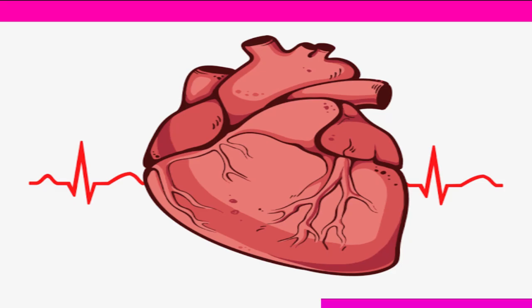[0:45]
I'm going to show you how to build a device to measure your heart rate and body temperature as efficiently and effectively as possible. And we start right now.
According to the American Heart Stroke Association, 48% of people have heart diseases. 17.3 million people die every year because of heart diseases. 7% of people have immune diseases, and 300,000 persons die because of it. We have a problem in monitoring our friends or family members suffering from heart diseases and immune diseases.
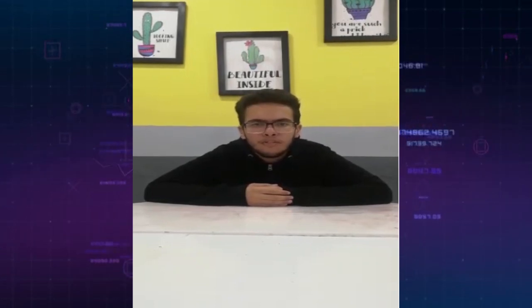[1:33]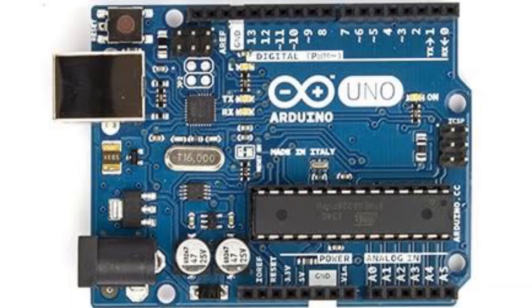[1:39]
So we thought about our project that sends the average heart rate and temperature per minute to the patient's family or friends in many ways. We will talk about them in the next videos. We will talk about our project, but first let me tell you what components we will need.
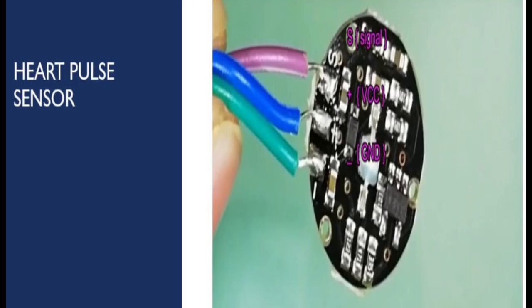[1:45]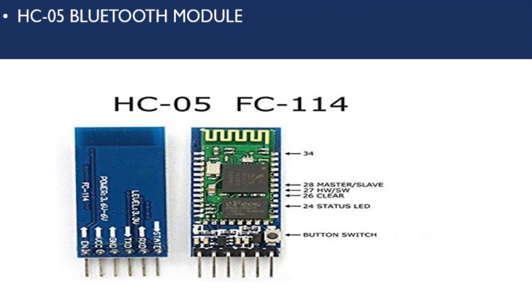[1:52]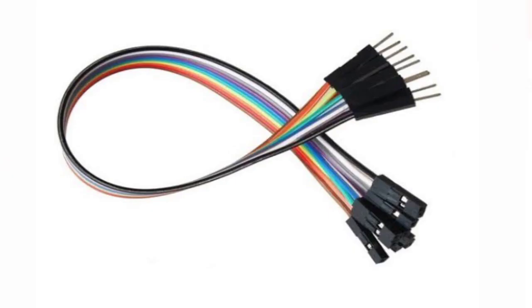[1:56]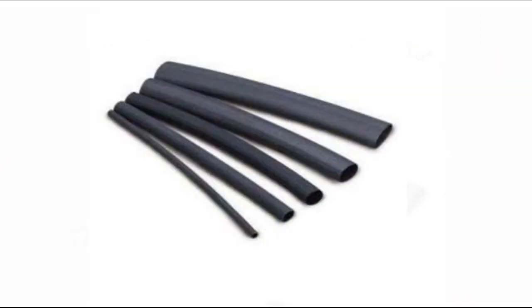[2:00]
We will need an Arduino Uno, a heart rate sensor, and a body temperature sensor. We will use the LM35 for our project, a Bluetooth module, male to female jumpers, and finally heat shrinks.
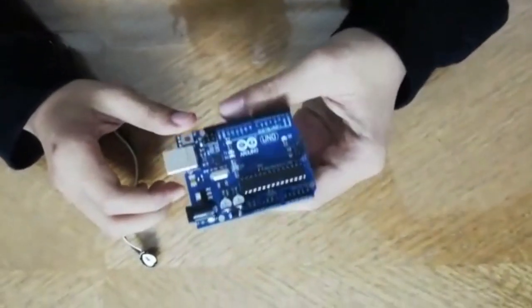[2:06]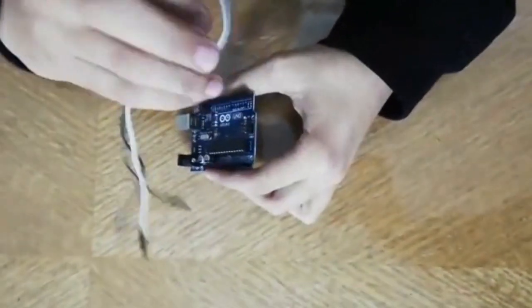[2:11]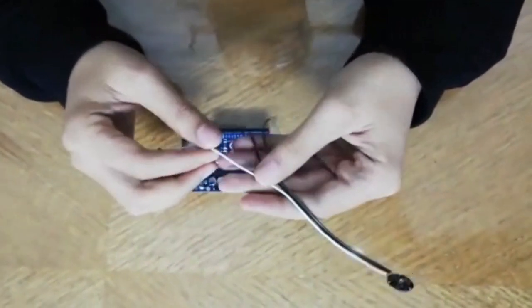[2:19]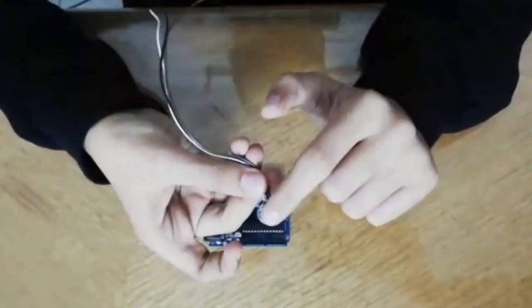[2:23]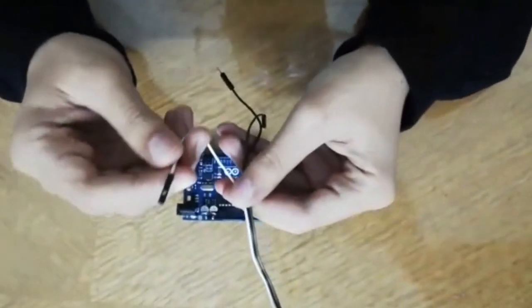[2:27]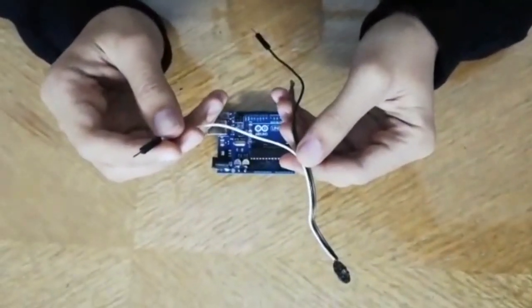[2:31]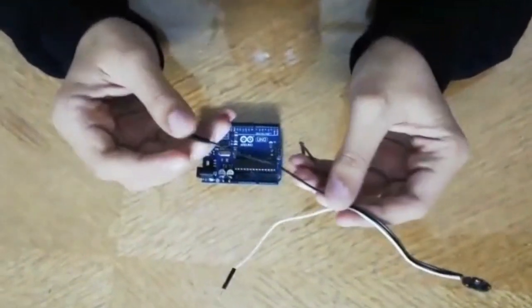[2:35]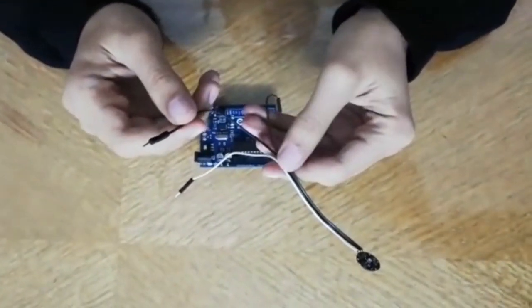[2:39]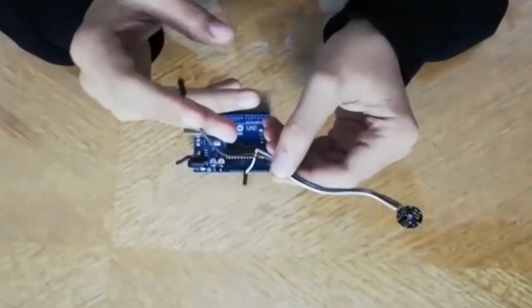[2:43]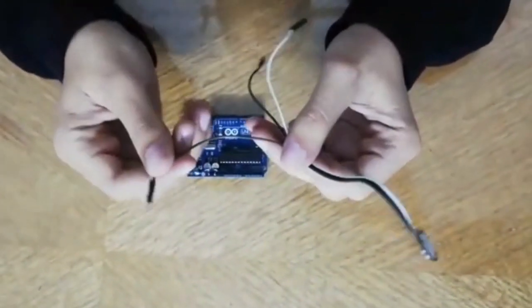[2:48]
Okay guys, right here we have the Arduino Uno and the first sensor, the heart rate sensor. It has three connections. From the right, the white one is the GND, the ground, which means the negative signal of electricity. The black one in the middle is the VCC, the positive signal of electricity. And right here we have the analog output signal.
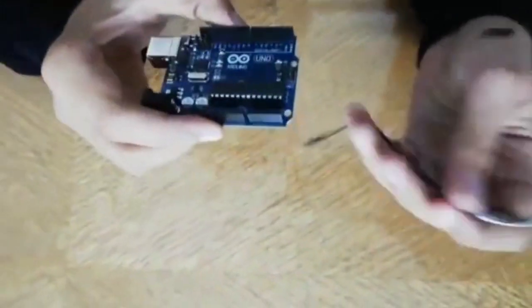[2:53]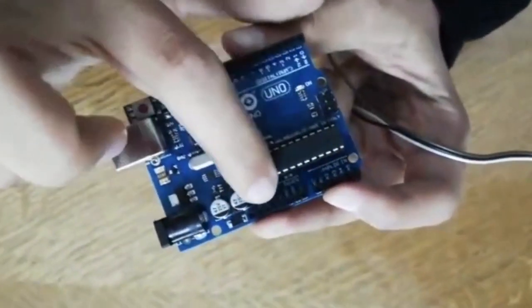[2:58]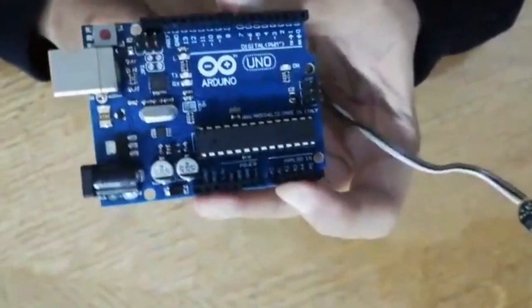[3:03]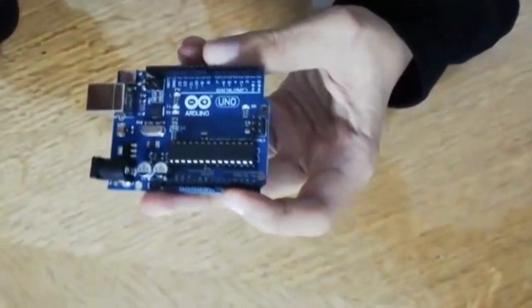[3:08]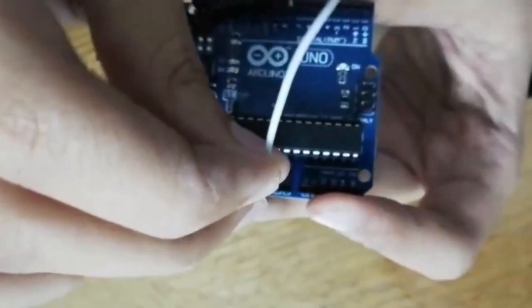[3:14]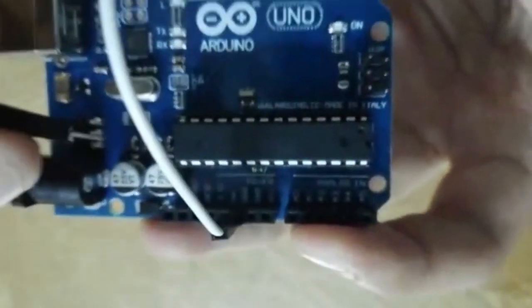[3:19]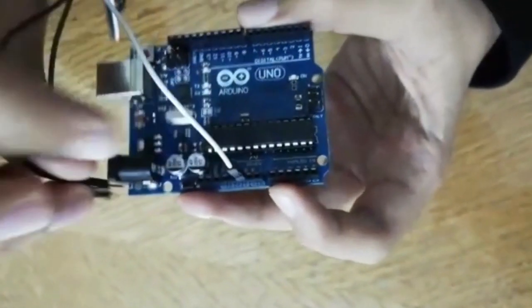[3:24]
Okay, let's start. We have three GND pins on our Arduino, two right here and one right here. You can connect the jumpers to any of them. The white one on the right, we will connect to the GND, as we see. Then the VCC, the positive one, we will connect to the 5 volt pin, which is beside the GND.
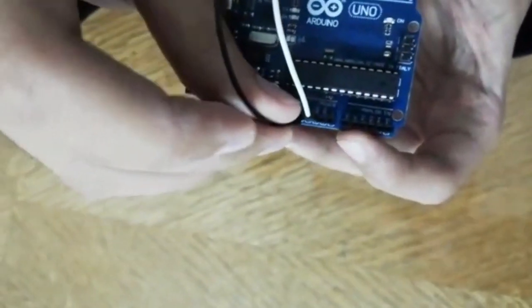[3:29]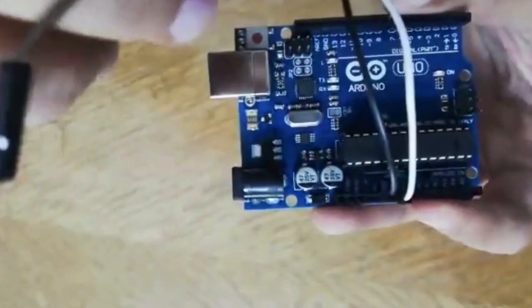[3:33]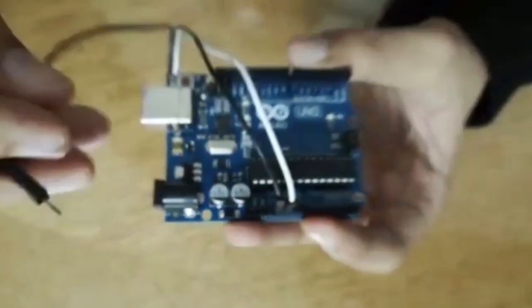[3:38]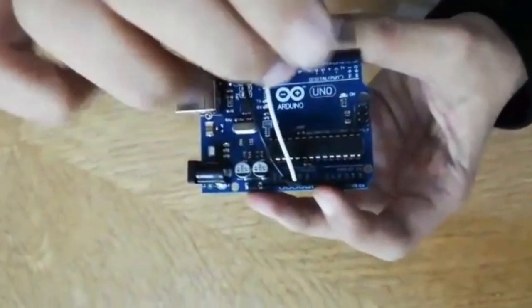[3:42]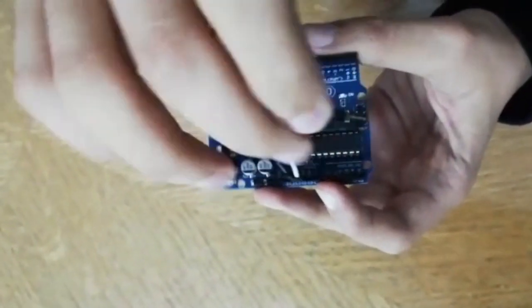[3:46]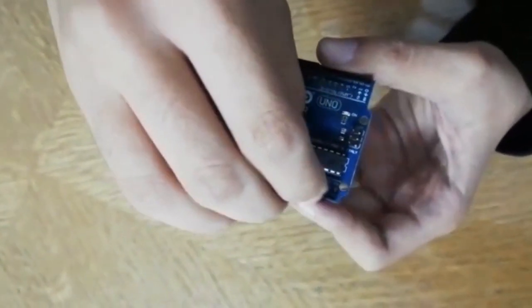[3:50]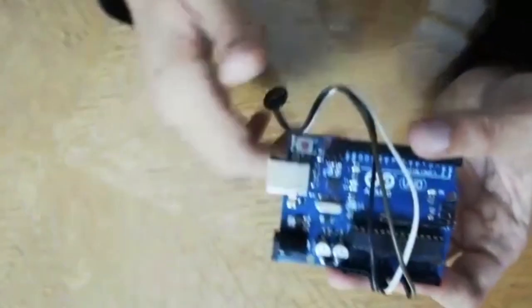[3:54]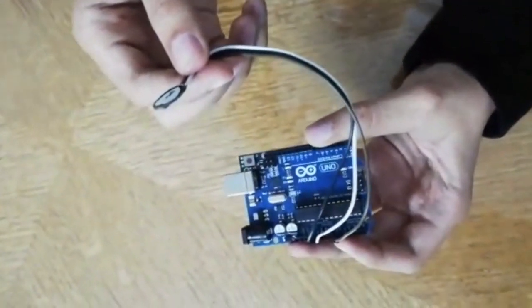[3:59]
The third one, the analog one, we will connect to one of the six analog pins here, from A0 to A5. Any of them will do, but I prefer A0. Okay, the heart rate sensor is now ready.
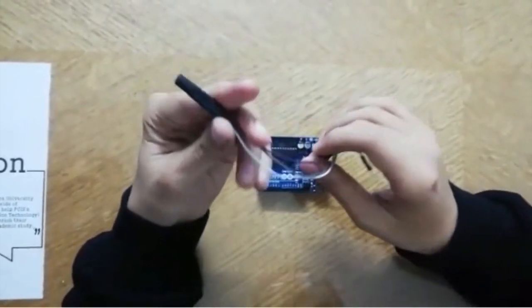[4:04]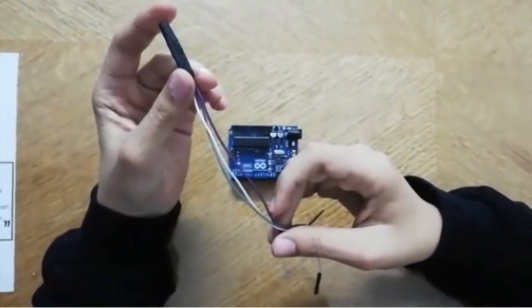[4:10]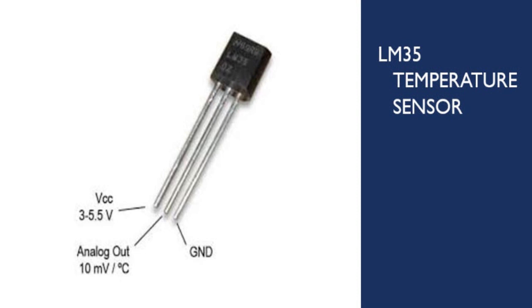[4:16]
Okay guys, in the second part we have the second sensor, the body temperature sensor. It's the LM35, but we isolated it with heat shrink. Like the one before, it has three connections. Look here, from the flat side, not the rounded one, we have three connections. The right one is the GND, the middle one is the analog signal connection, and the left one is the VCC, the positive connection.
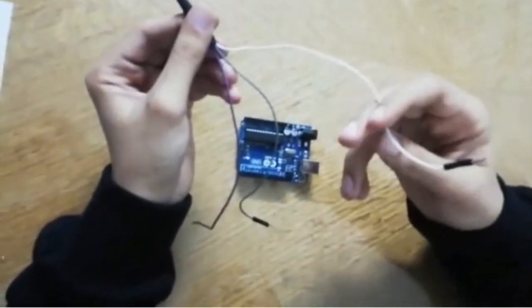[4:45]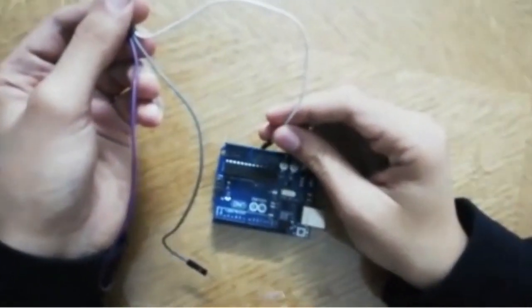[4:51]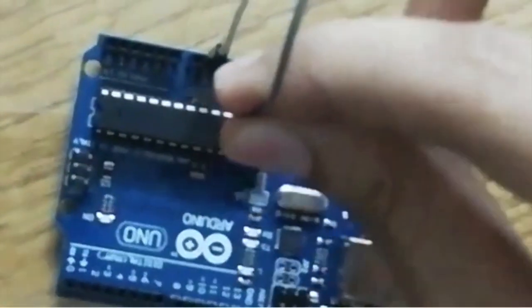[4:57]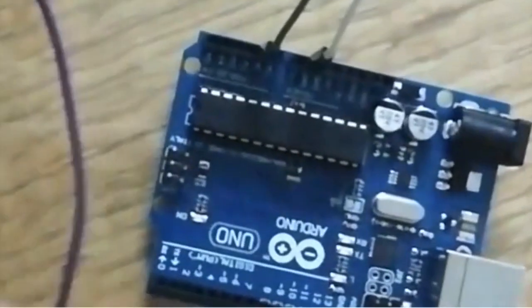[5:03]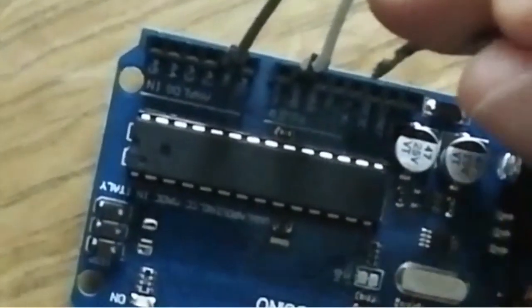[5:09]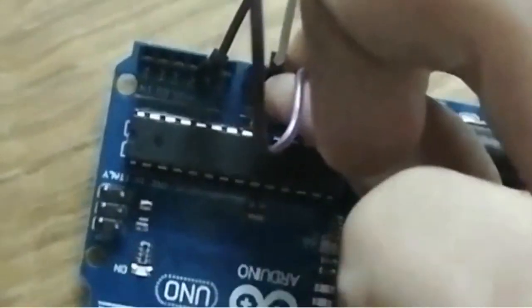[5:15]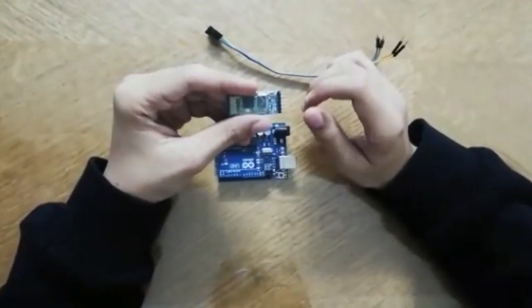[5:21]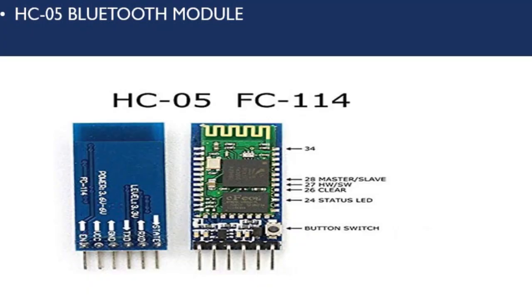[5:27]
Okay, we will connect GND to one of the three GND pins, and the signal we will connect to any of the analog pins. VCC, finally, we will connect to the 5 volt pin. Okay, we are done.
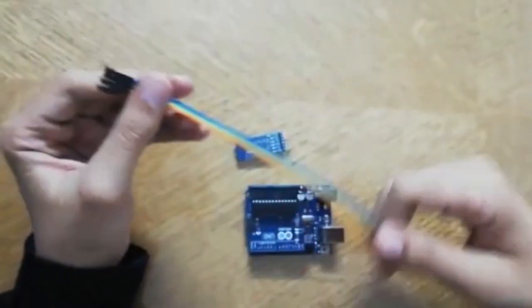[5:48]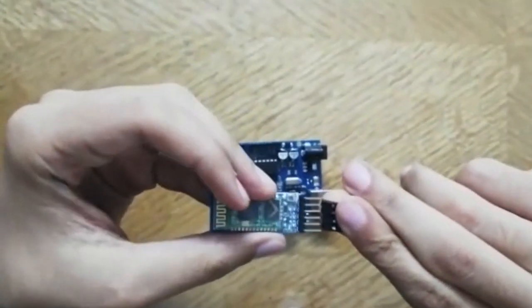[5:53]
Okay guys, the third and final part is the Bluetooth module. We will use the HC05. Right here we have six connections. We will ignore the first one, the state, and the last one, the EN. We will use the four in the middle, and we will use female to male jumpers. We will start to connect the jumpers to the Bluetooth module.
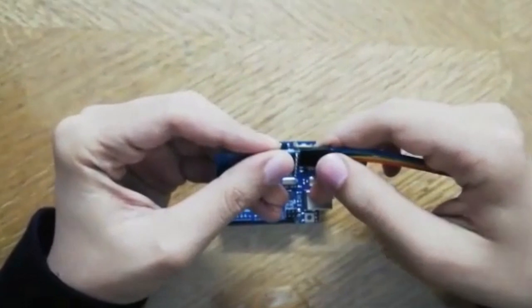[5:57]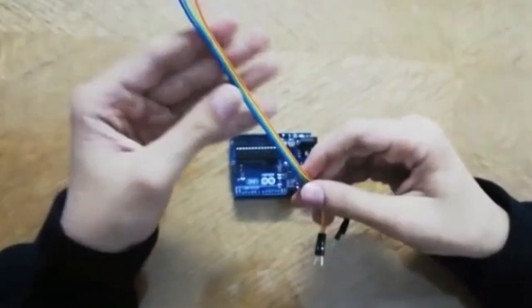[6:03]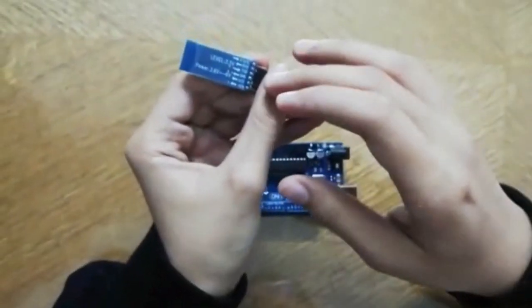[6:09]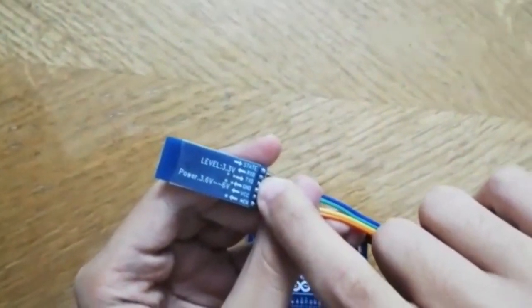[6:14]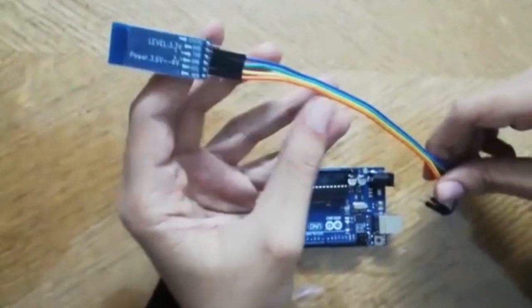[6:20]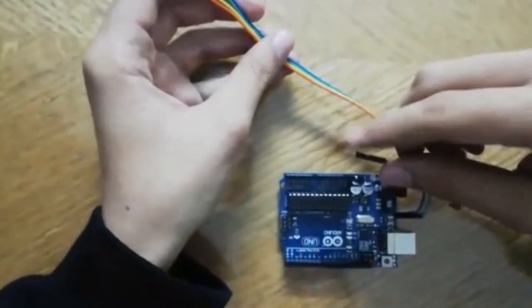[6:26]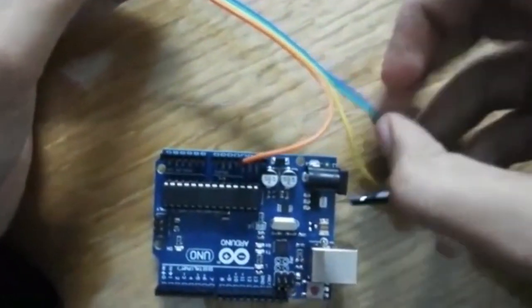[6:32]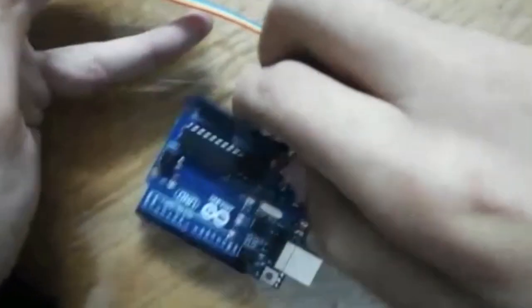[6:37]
Okay, we are done. Let's connect them to the Arduino. Right here, from low: VCC, GND, TXD for transmitting the data, and RXD for receiving the data. The orange one is the VCC. We will connect it to 3.3 volt. And the yellow one is the GND. We will connect it to the GND pin right here.
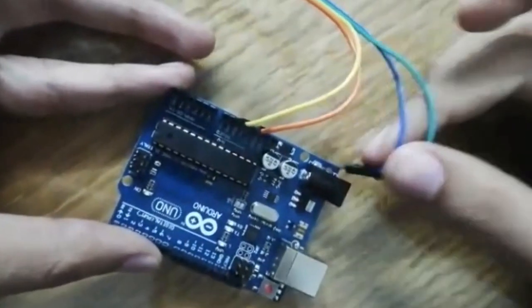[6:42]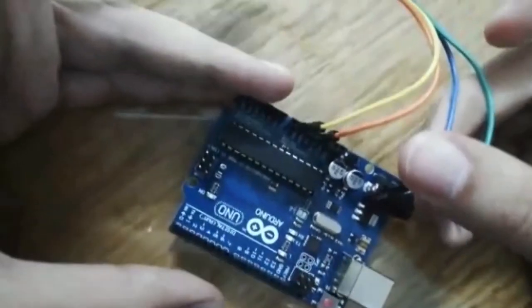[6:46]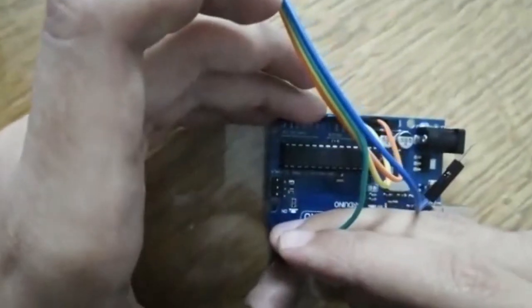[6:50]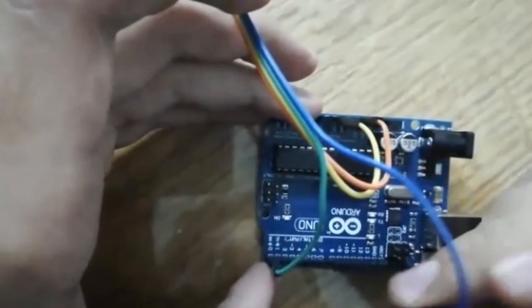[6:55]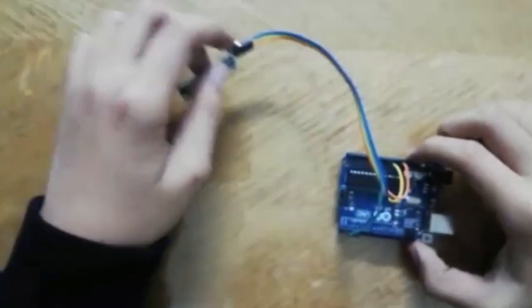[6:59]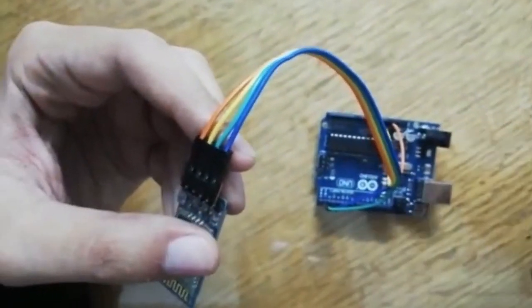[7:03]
Okay, and the TX is the green one. We'll connect it to the RX pin, and the RX to the TX pin, so the Arduino and the Bluetooth module can transmit and receive the data.